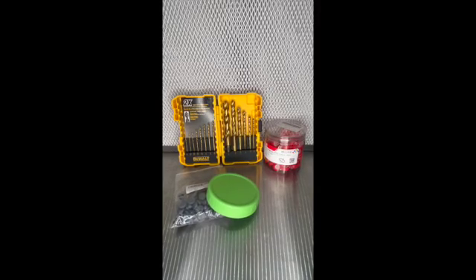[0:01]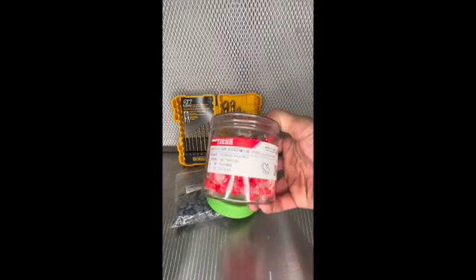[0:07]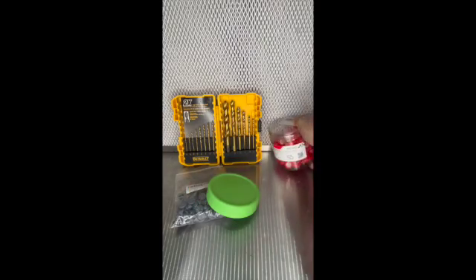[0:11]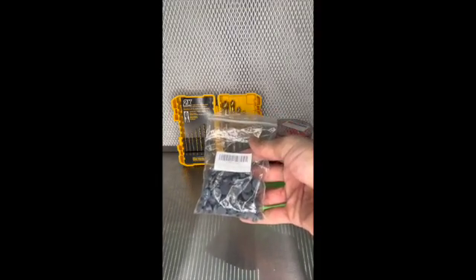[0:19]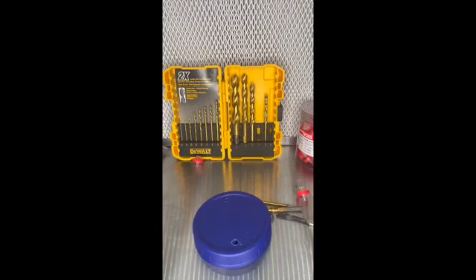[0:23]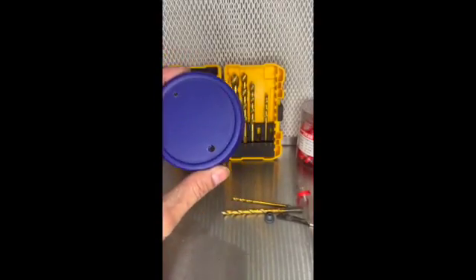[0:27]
To make your liquid culture lids, these are the supplies you will need. You will need some syringe filters. These are the 0.22 µm, 13 millimeter, a Ball Mason jar wide lid plastic lid, some injection ports, and some drill bits. Once you've got your supplies together, you're gonna take your plastic lid and you're gonna drill two holes.
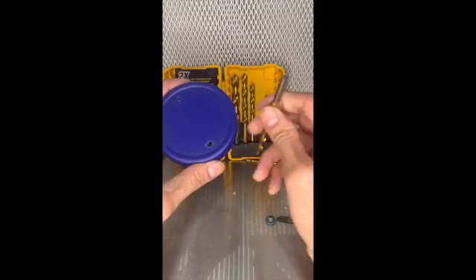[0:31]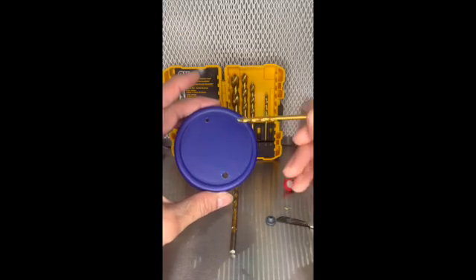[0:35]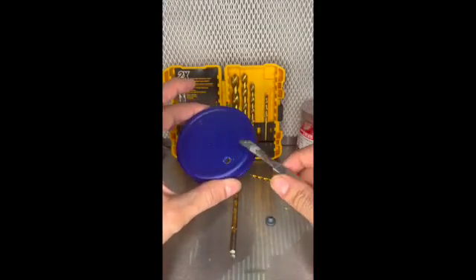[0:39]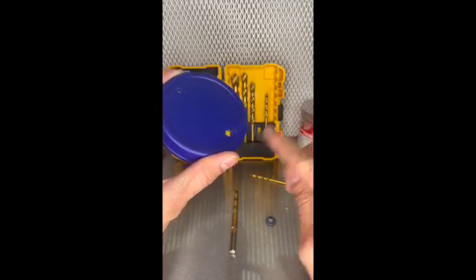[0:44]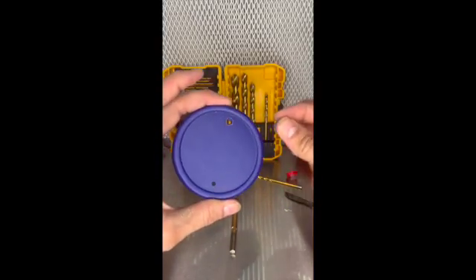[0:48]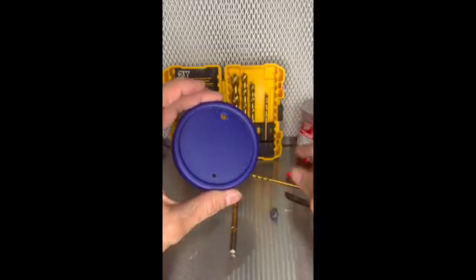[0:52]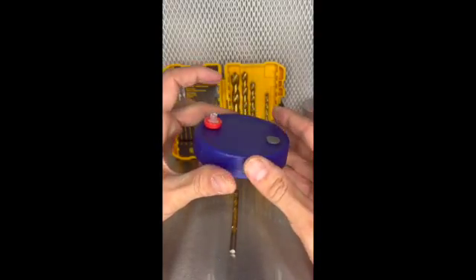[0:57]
You're gonna drill one hole with a 1/4 inch drill bit and the second hole with the 5/32 drill bit. Once you've drilled your holes, you're gonna take your scalpel and just clean off these small parts here that are kind of coming up, make it nice and clean, and then we're gonna pop the two pieces in, the injection port and the syringe filter. It is a tight fit, but we did get our pieces in.
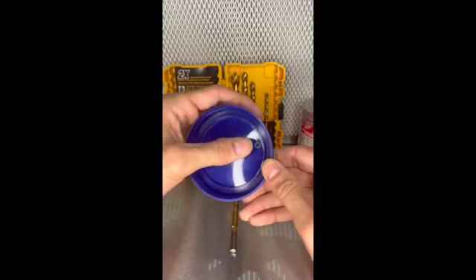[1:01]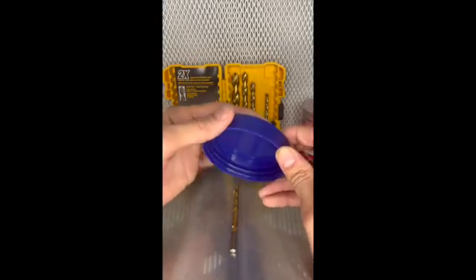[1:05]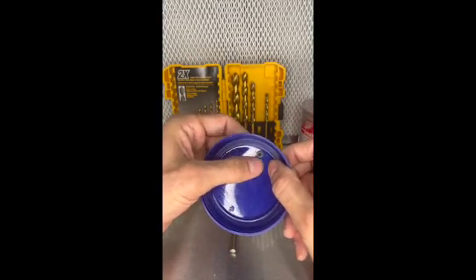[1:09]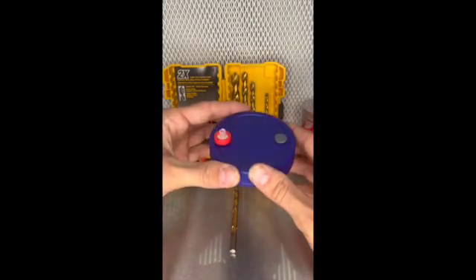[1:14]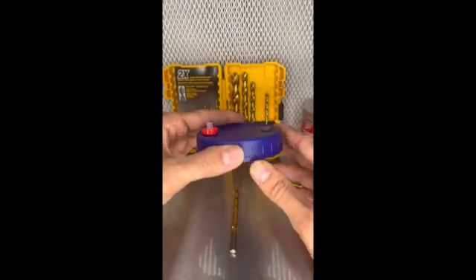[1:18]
You have to just pop this in there. It'll come right through. Then the injection port, it's a tight fit, and sometimes you gotta kind of spin it a little bit and pull it in with your fingers. And that's important why we clean this back end with a razor so that these pieces will come through nice and clean. Now we'll move on to making our liquid culture solution.
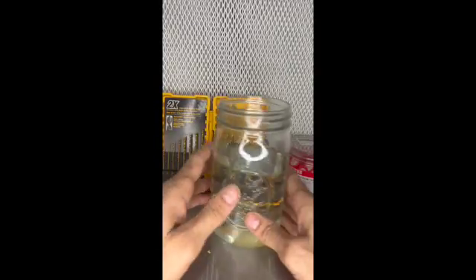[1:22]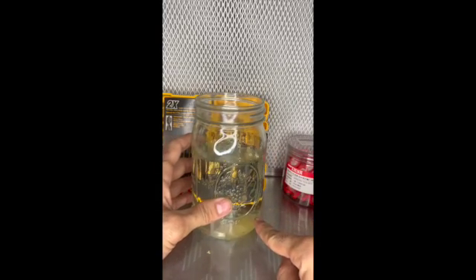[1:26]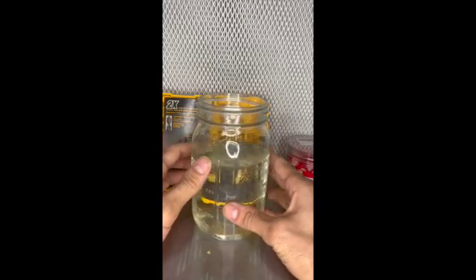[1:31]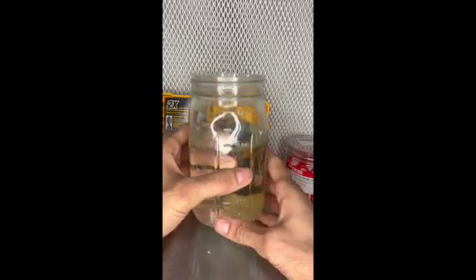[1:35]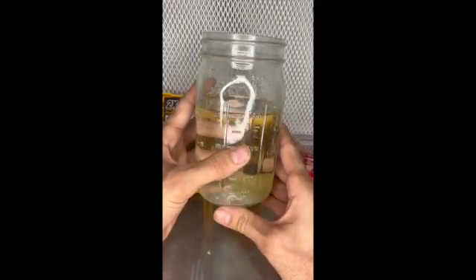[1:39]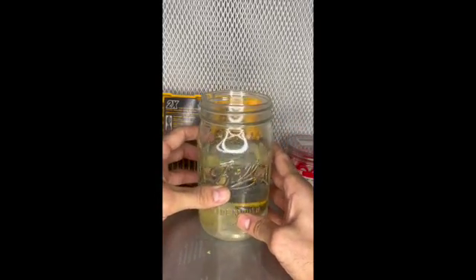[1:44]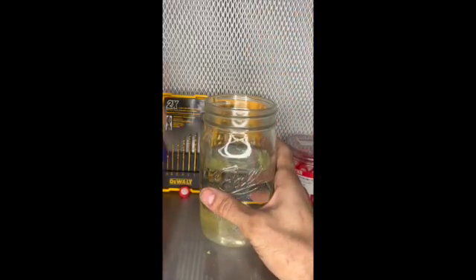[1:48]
Now that we have our lid made, we will take a Ball Mason jar, a wide mouth, we'll add 24 grams of honey or light corn syrup. You'll then add 576 grams of water. That will make a perfect total of 600 grams of solution, and it'll make a 4% solution, which is ideal for liquid culture. You then add a magnetic stir bar in there, top it off, and you're good to go.
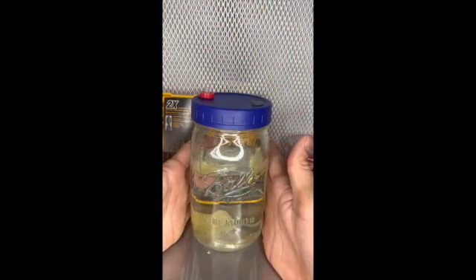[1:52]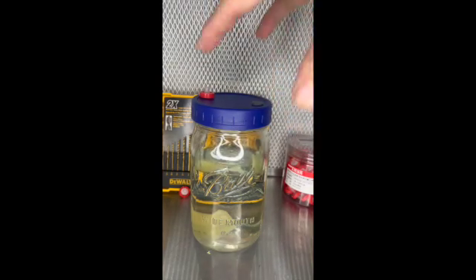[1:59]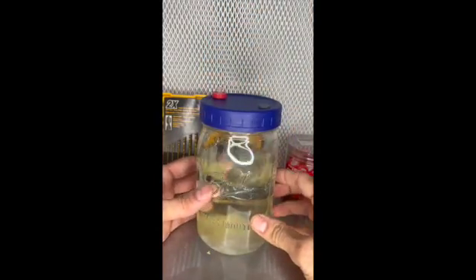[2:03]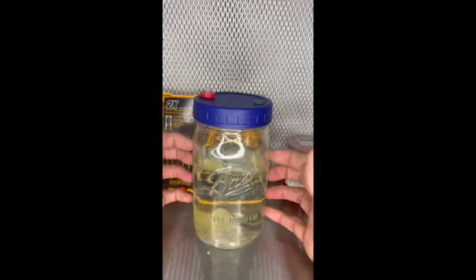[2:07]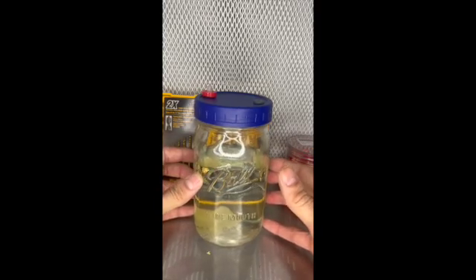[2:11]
If you don't have a magnetic stir bar, what you can use is a marble, throw it in there, and then just kind of shake it around like this every couple days or every day, and it'll work just fine. When you pressure cook this to sterilize the whole solution, we like to put it inside
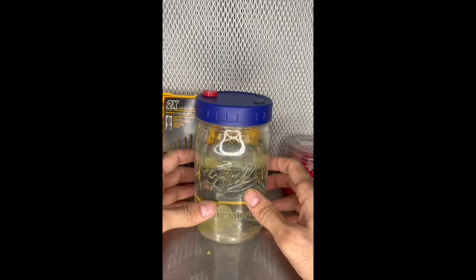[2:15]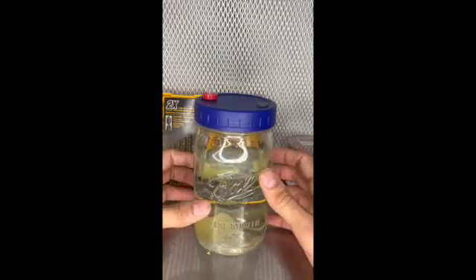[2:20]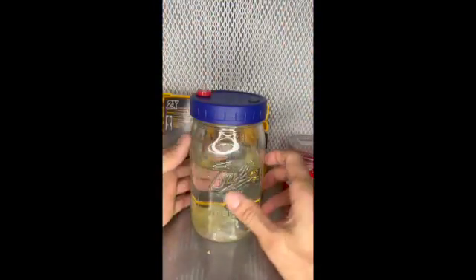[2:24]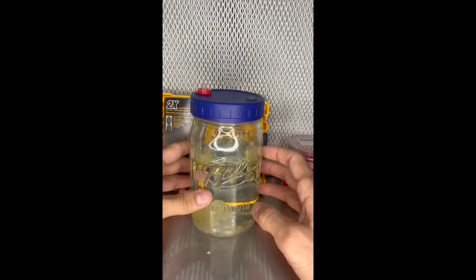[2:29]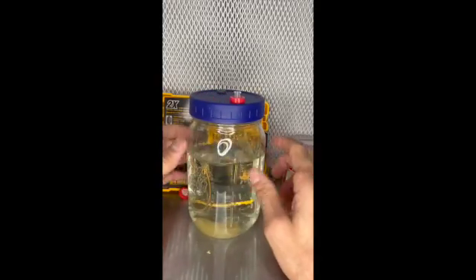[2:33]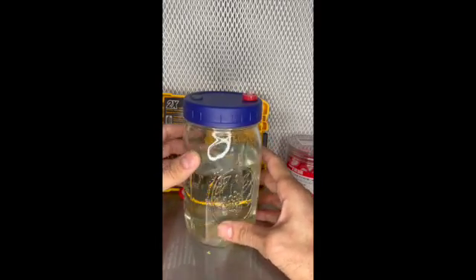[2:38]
a mushroom bag, whether it be a substrate bag or a grain bag, anything that's autoclavable. We'll put it in there, we'll seal it up, toss it in the PC. We will sterilize it at 15 PSI for 25 minutes and let it cool to room temperature, and your solution's good to go. You can then inoculate it, and in 10 to 14 days, you will have a beautiful, viable liquid culture solution.